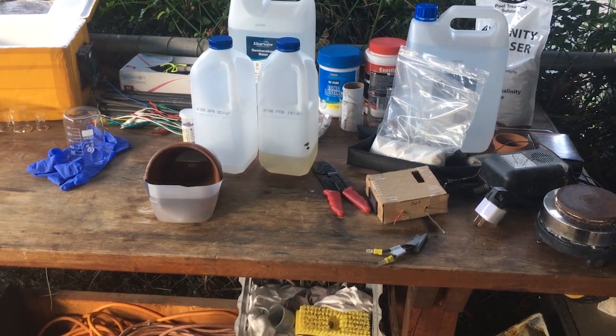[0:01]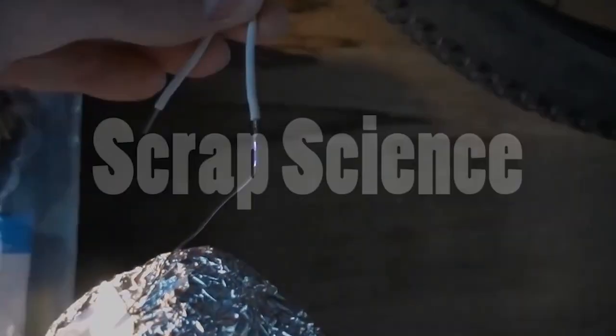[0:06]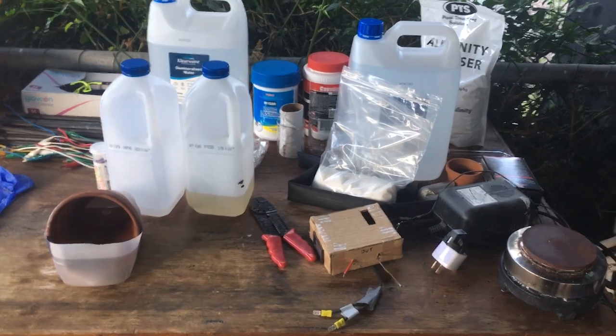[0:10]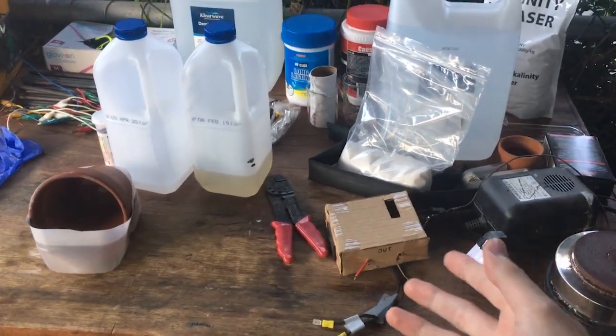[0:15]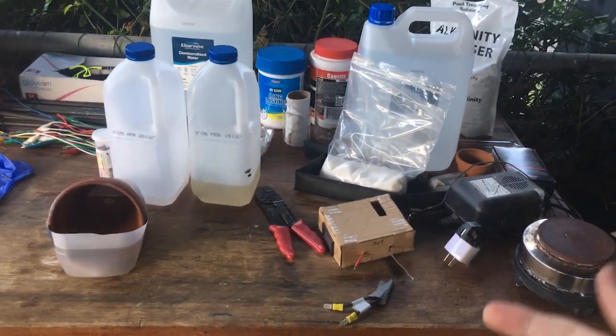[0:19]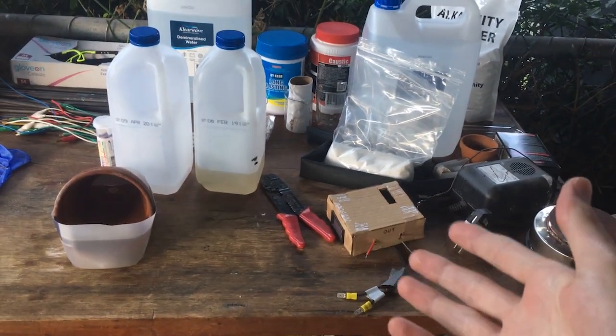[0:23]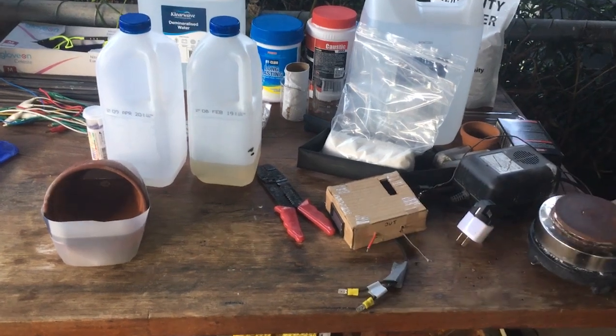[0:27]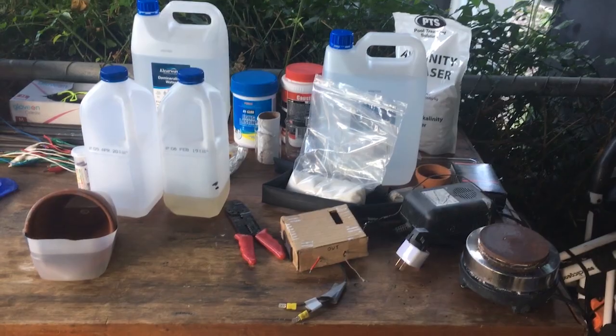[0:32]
So this video is going to be quite a bit different to most of the other videos on this channel. It is a video that we filmed last year as an entry for an engineering competition. What we did was, as you'll see in the video, manufacture a microfluidic circuit that is capable of performing a simple acid-base titration. And now that the competition is over, we thought that the video was worth posting. Maybe you'll be interested. Anyway, on to the video.
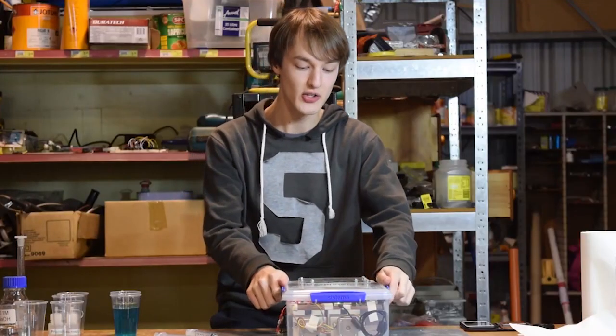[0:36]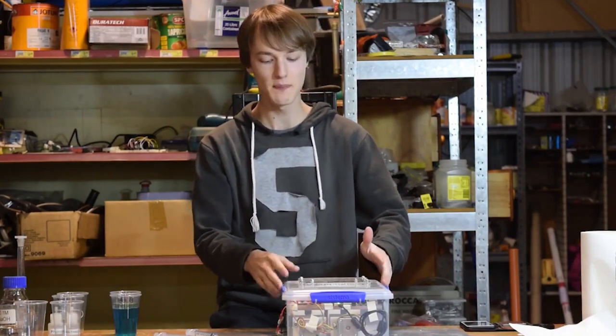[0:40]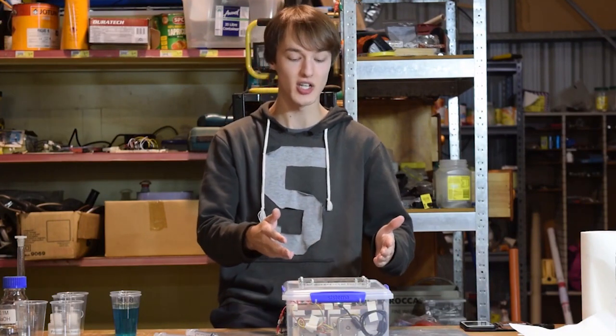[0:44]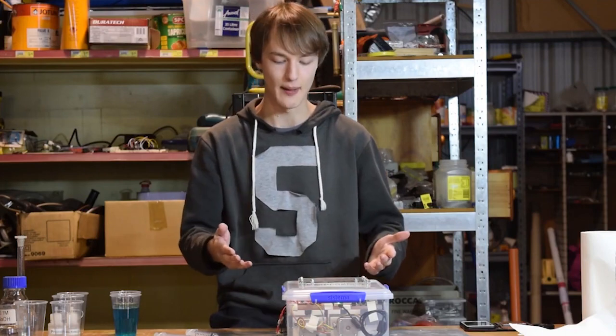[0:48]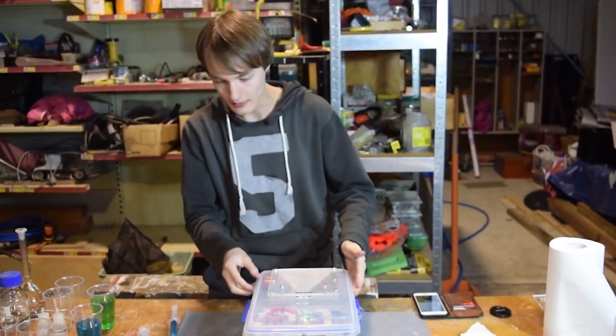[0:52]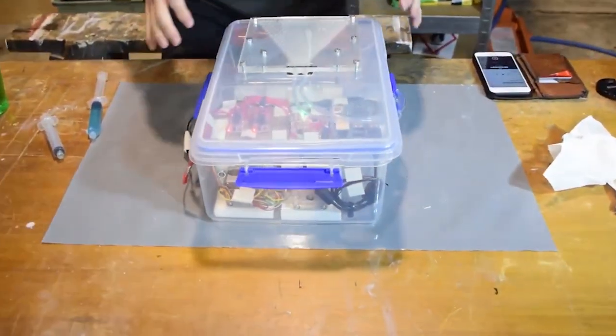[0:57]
So this is our entry to the 2019 Engineering Challenge. I would call it the titration station. What it basically allows us to do is to perform a semi-accurate titration of an acid or a base without a lab setup or expensive glassware. All right, so to explain how all this works, we'll go over each of the parts that we've got here.
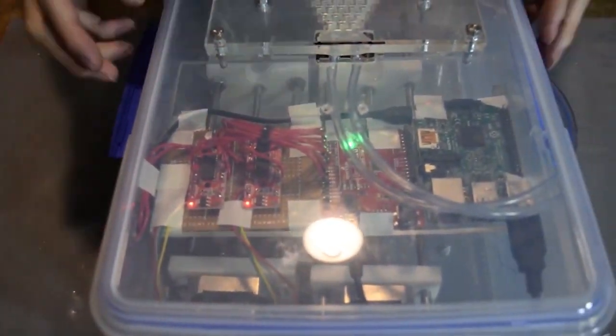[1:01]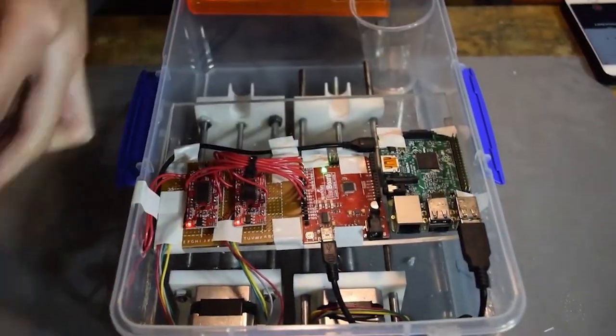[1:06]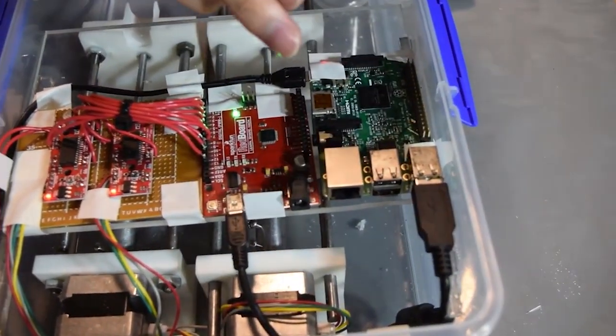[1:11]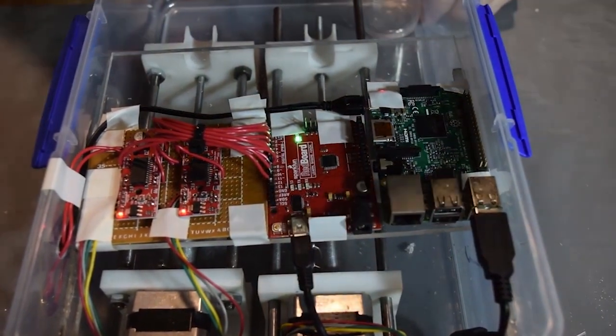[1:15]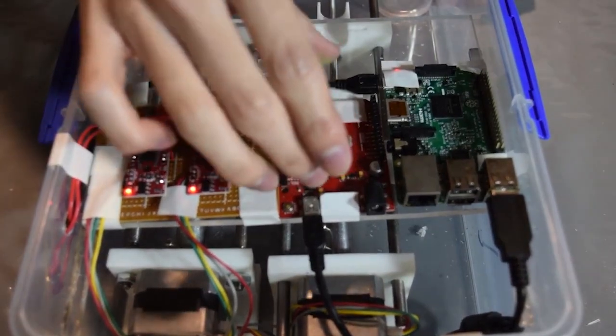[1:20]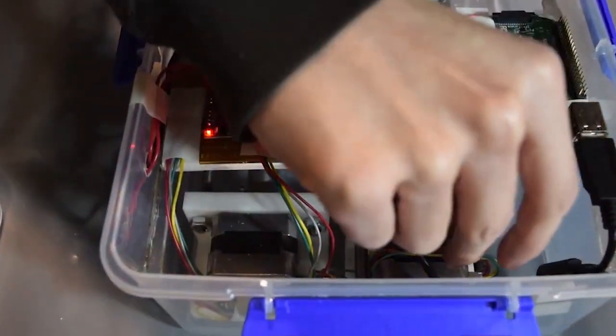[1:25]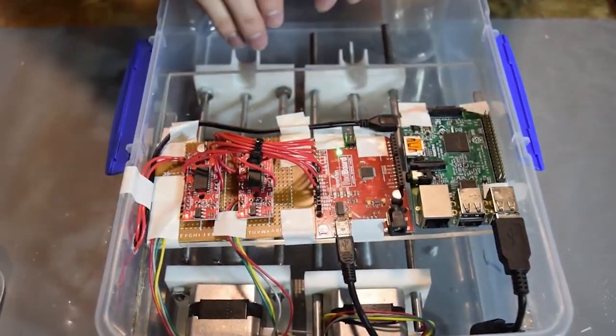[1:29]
We've got all of our power lines coming in from the side here. What that's powering, if I take the lid off for now, we have a Raspberry Pi, which allows us to run the whole thing using an app or a website on a phone. We have an Arduino, which is pretty much just running these driver circuits, which run the stepper motors, which we've got back here. These stepper motors are used to empty syringes with these syringe pumps.
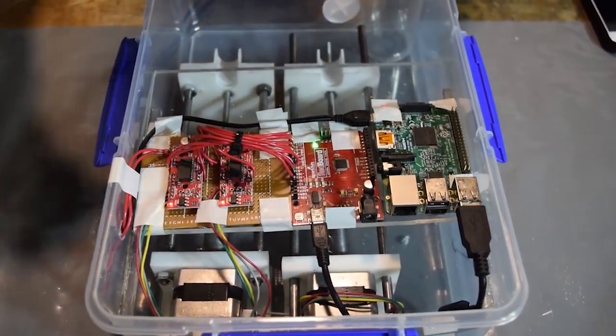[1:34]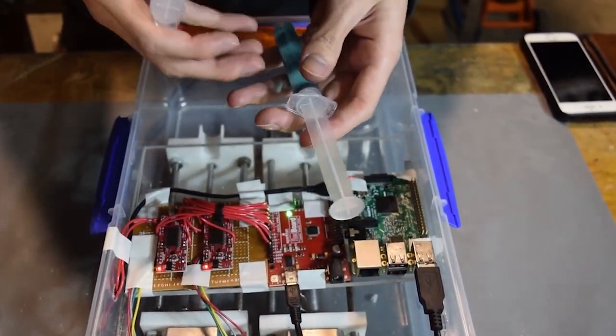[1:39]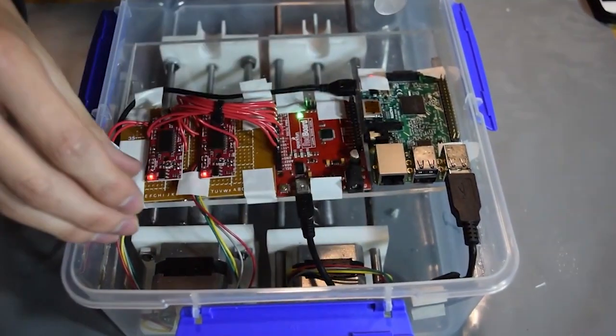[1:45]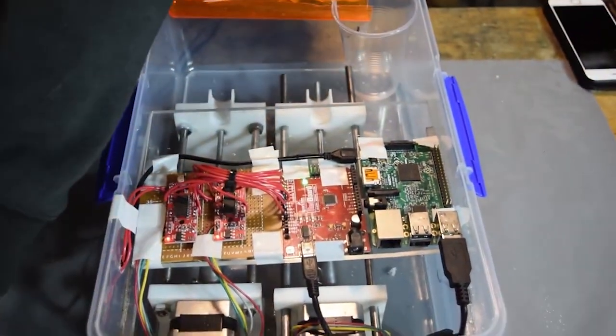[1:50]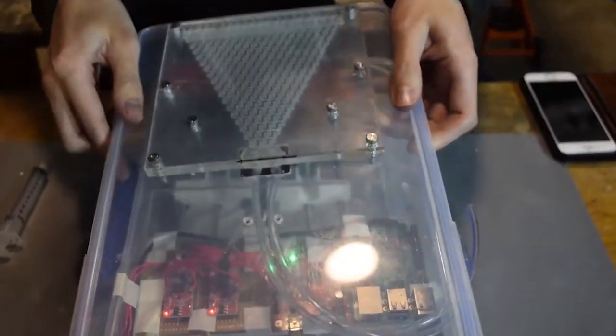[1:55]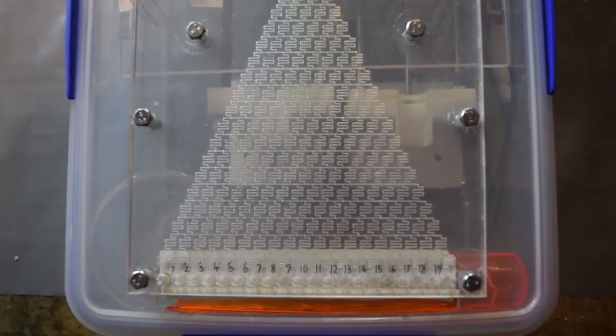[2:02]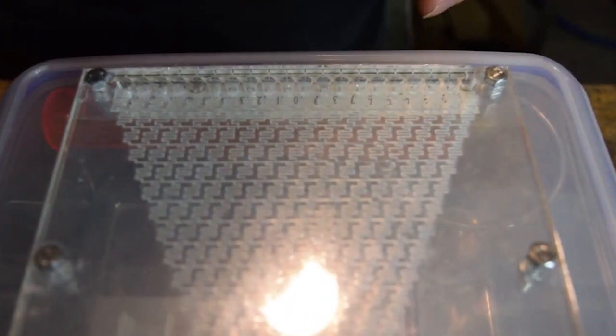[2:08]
So what these syringes will be filled with is, one of them will have a standard solution and one of them will have a titrate in it. And then what we can do with the drivers and the stepper motors is empty these syringes at a very controllable rate. With the syringes, we'll plug them into these tubes here, and this thing, which we've laser cut, is a grid of microfluidic channels, which is designed to create an even gradient of concentrations of both the titrate and the standard solution across the output line here.
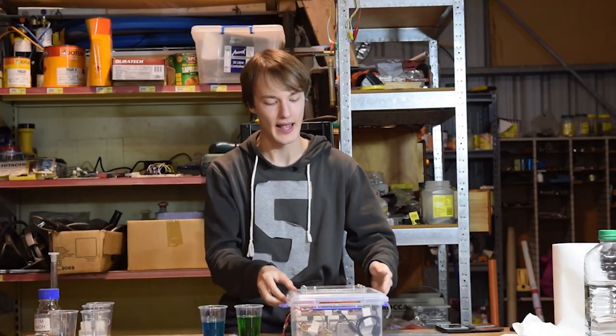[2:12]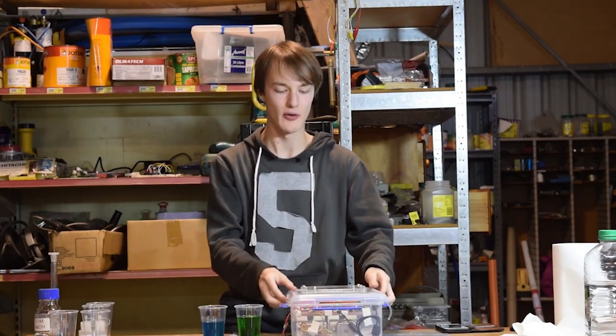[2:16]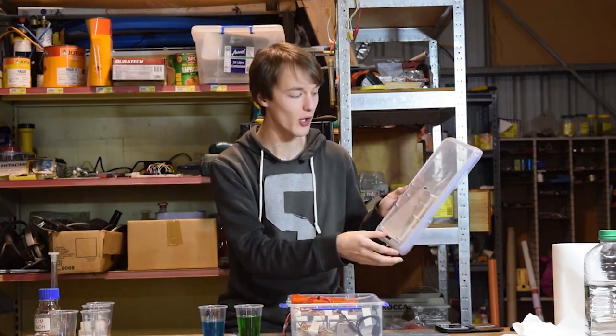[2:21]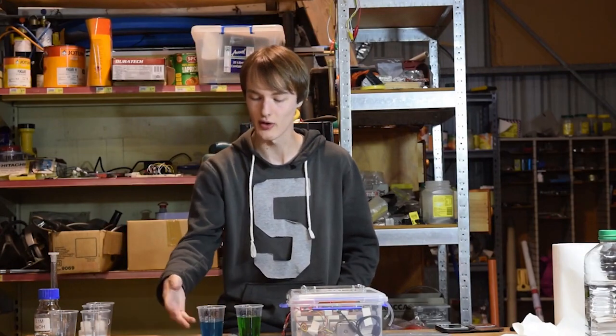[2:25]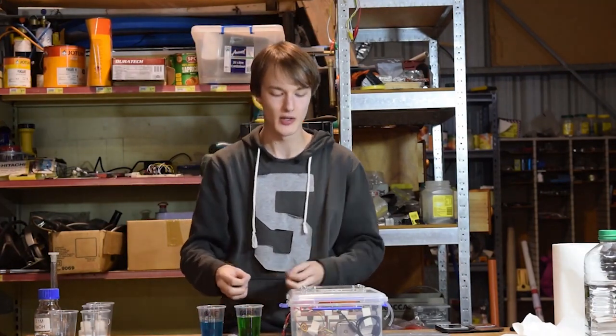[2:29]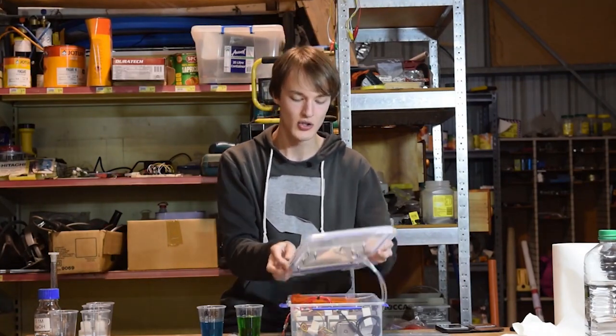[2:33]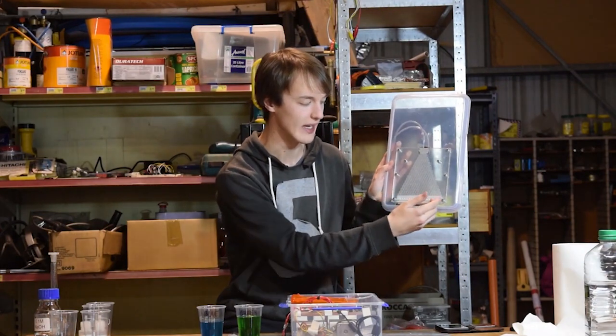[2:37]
Before we explain how this can actually be used to do a proper titration, I thought it would be best to just show you how this gradient generator works using just food colouring in water. We've got a blue solution and a green solution. We can pass both of these through our gradient generator and we should get a generated output line from green to blue, and we should get an even distribution between those two.
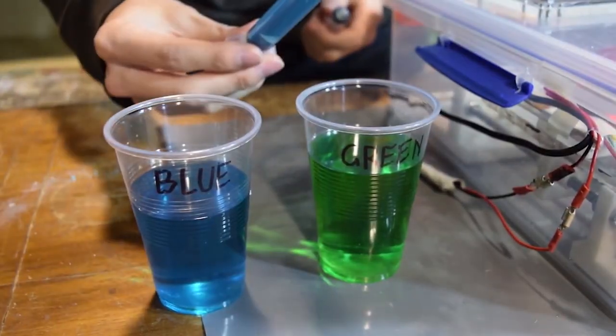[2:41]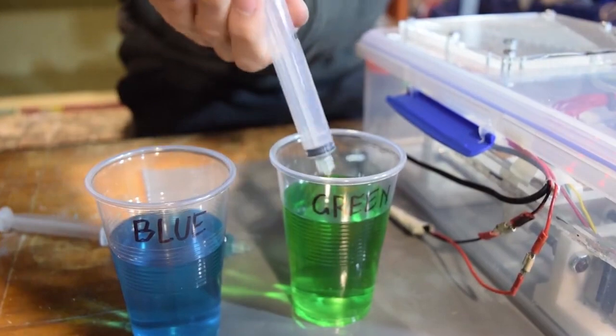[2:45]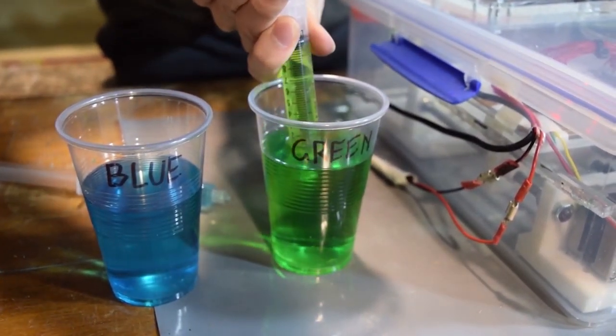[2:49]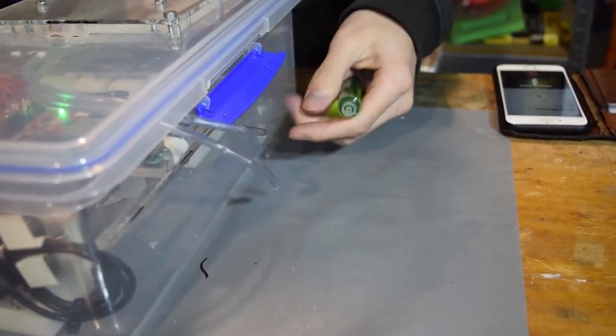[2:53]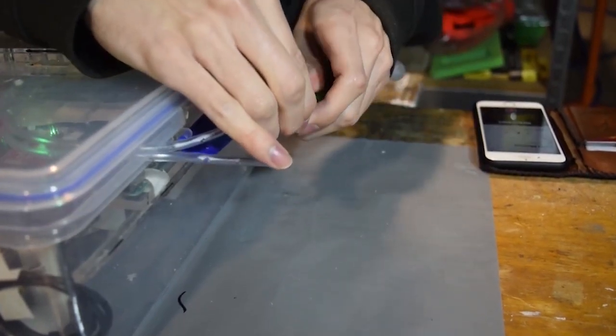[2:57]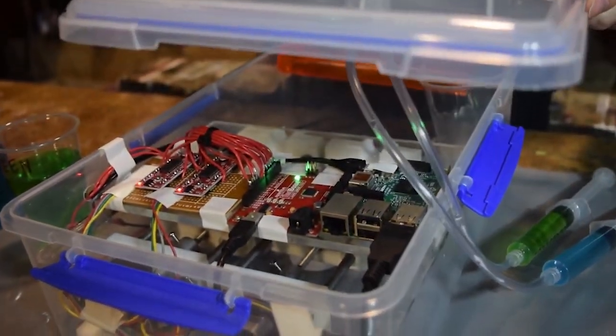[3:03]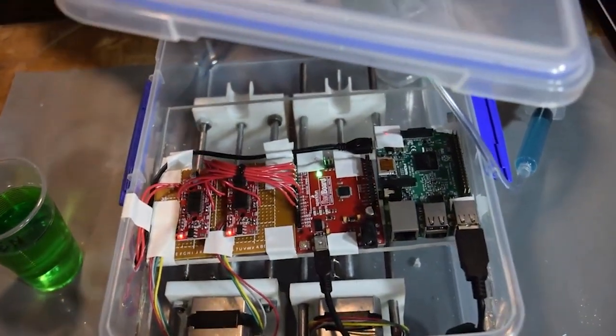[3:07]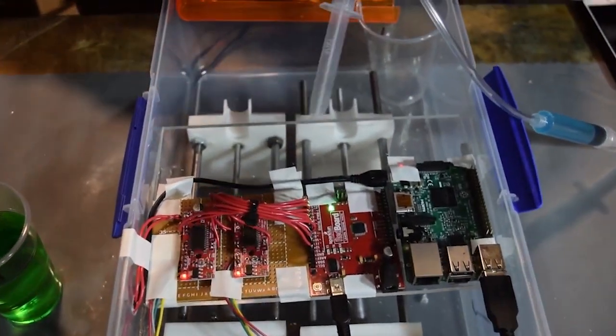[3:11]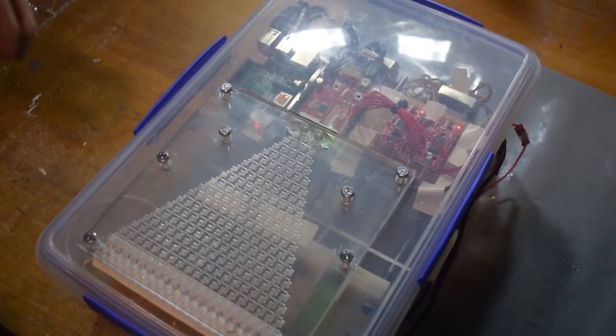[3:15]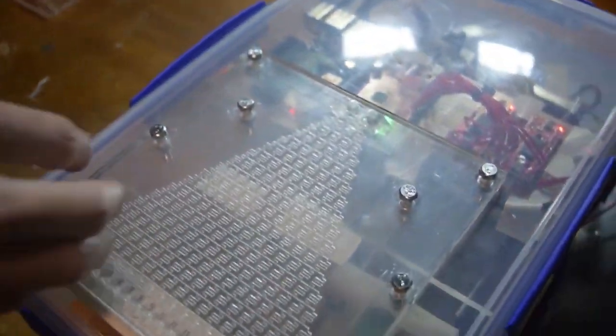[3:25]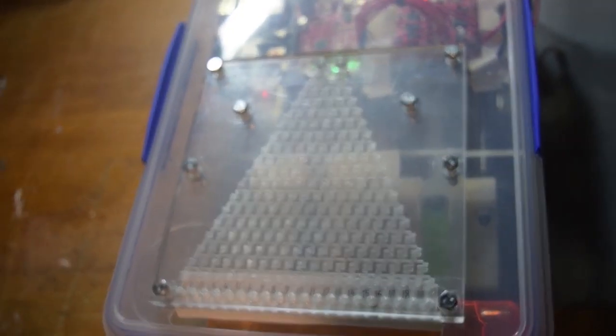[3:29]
So now what we're going to do is fill these syringes with our different coloured solutions. Fill this up and that's good to go. So we've got our syringes, and what we have to do now is just connect these straight on to our input tubes for the gradient mixer. So what we need to do now is stick the syringes into the syringe pumps. All right, so you can see now, if we have a look from the side, we've got our syringes down there in our syringe pumps ready. They're connected up to our gradient generator, and they're all wired up, ready to go. So we'll get the app set up and then we can actually run the device.
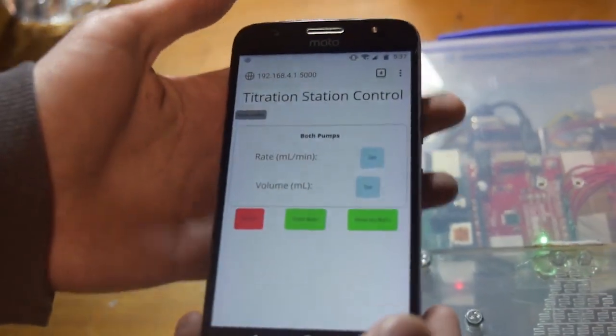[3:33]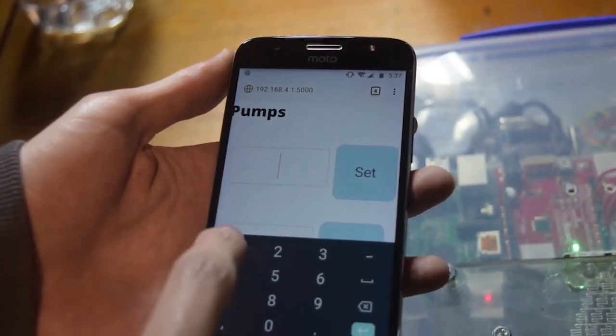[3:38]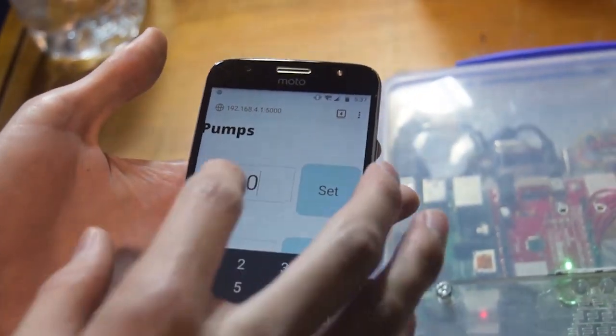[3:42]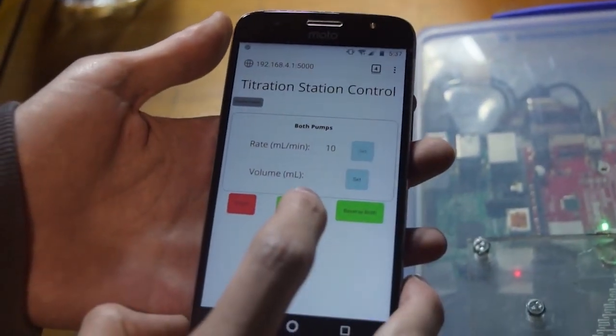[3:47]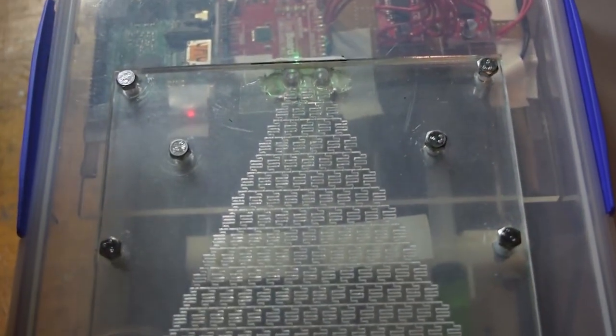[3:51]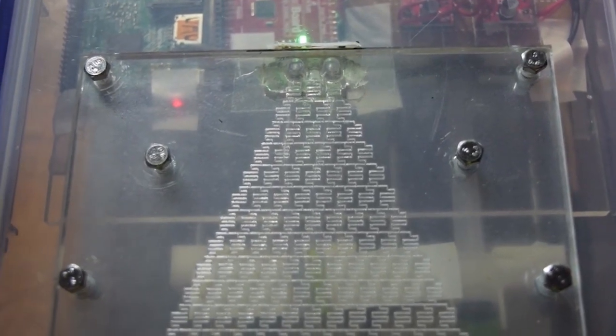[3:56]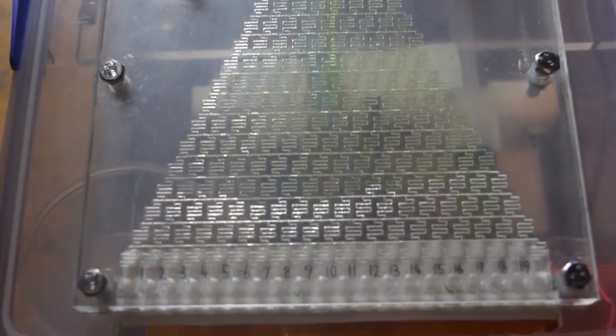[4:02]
So now we've got the app set up on the phone. What we need to do is just put in a rate for the syringe pumps to pump at. It's 10 milliliters per minute. So we'll set that. And then, easy enough, we can just start. Liquid should start flowing through the gradient generator, creating a perfect gradient of green on this end, green to blue, as you should be able to see on the output now.
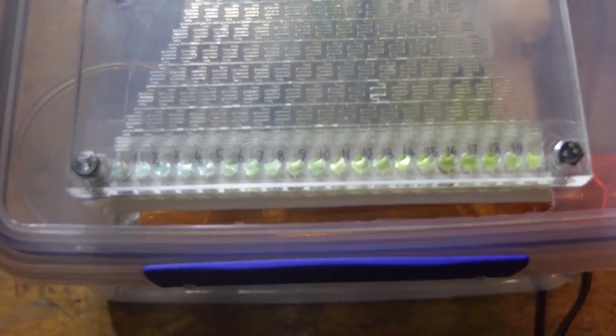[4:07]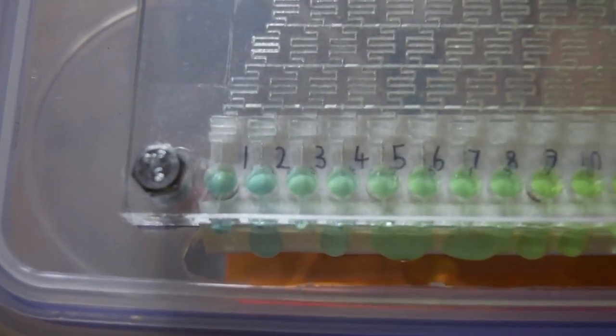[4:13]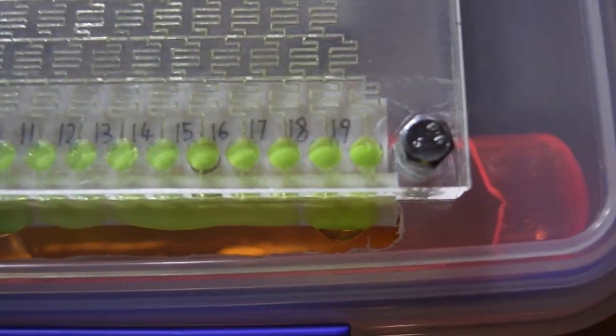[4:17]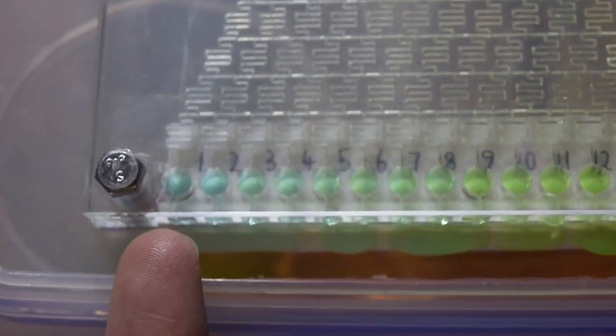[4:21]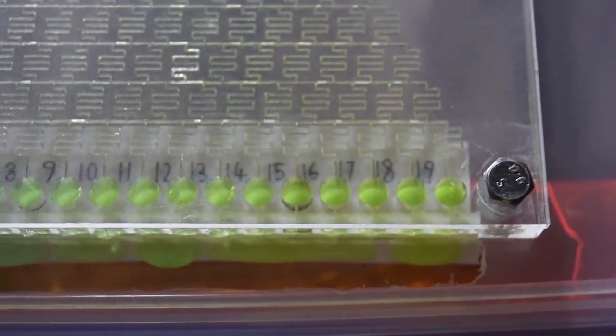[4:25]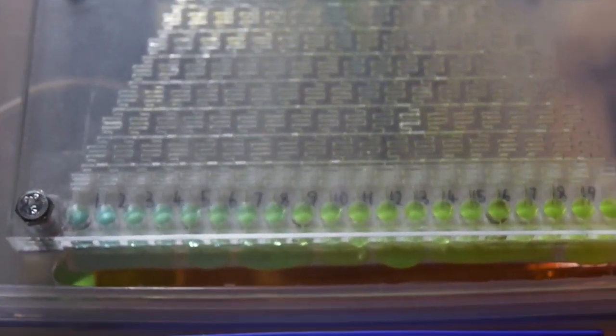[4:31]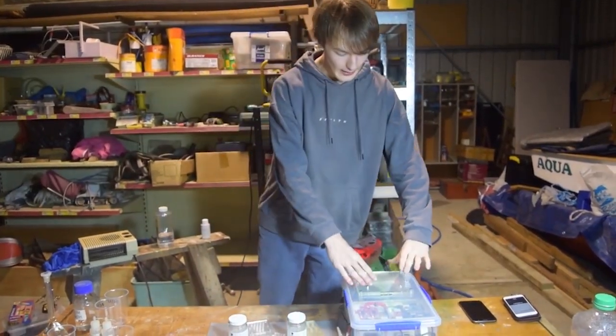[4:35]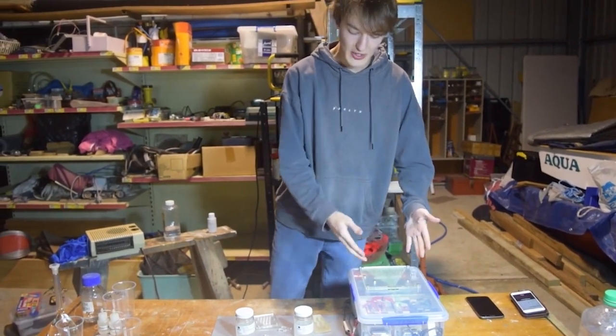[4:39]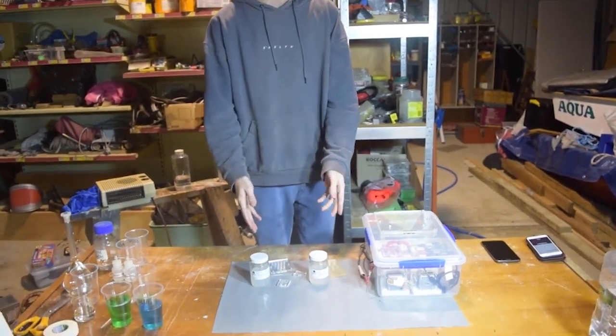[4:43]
As you can see, we've got a really nice gradient from blue down this end all the way up to a pure green on this end. Obviously the green dye is a little bit stronger than the blue stuff, but we do have a nice gradient nonetheless. So now before we go and actually do a proper titration with this and explain how it can actually be used for a titration, we thought we'd go over all of our prototype designs.
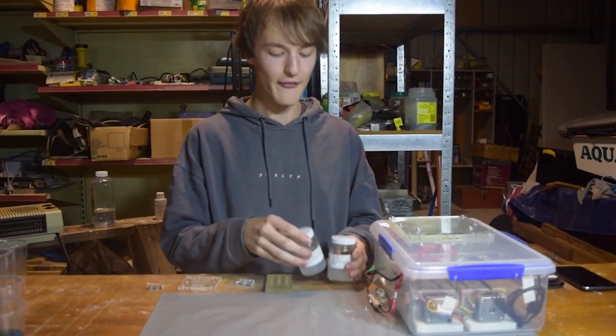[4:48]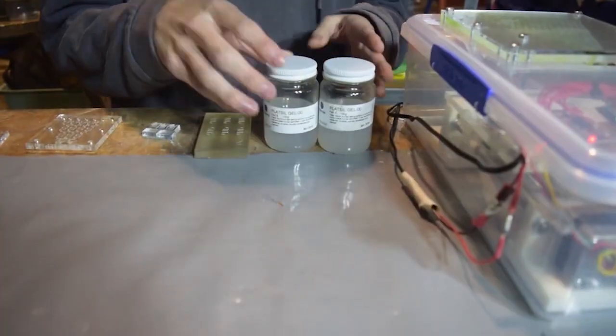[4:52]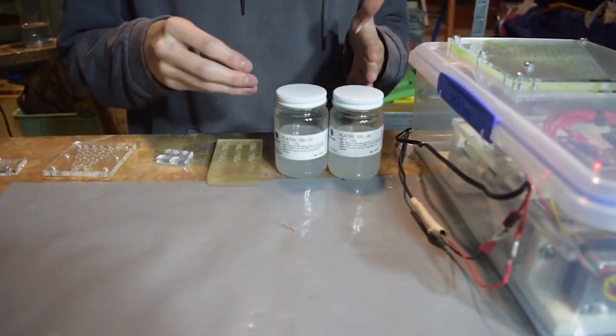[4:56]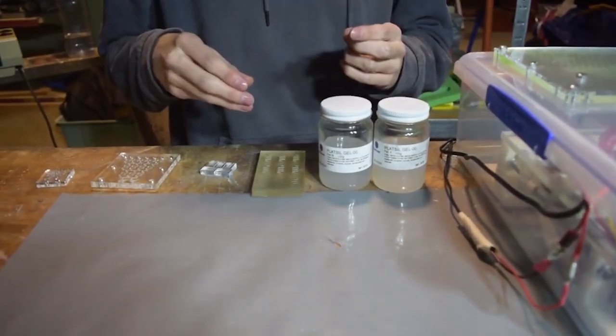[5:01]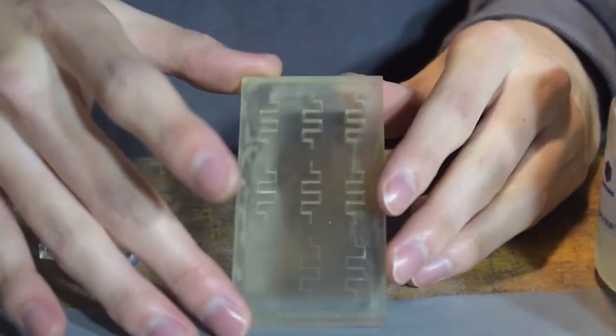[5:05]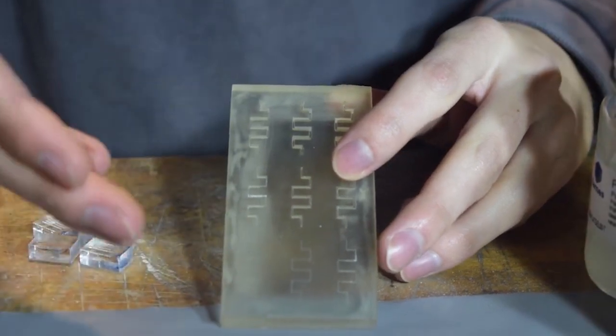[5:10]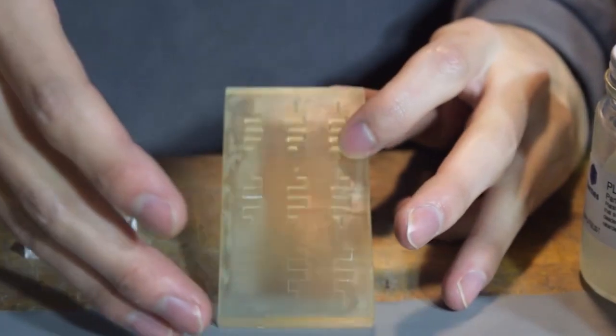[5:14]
So we knew we needed to make microfluidics, and our first design involved this silicone gel. We had a few tests with that and we realized that bubbles and low resolution just wouldn't let that work. So we scrapped that idea and moved on to 3D printing. For 3D printing, we actually ran into a few of the same problems as before. When we tried to print really small channels, which is what we need for microfluidics, we couldn't achieve a high enough resolution. We could only print really big channels.
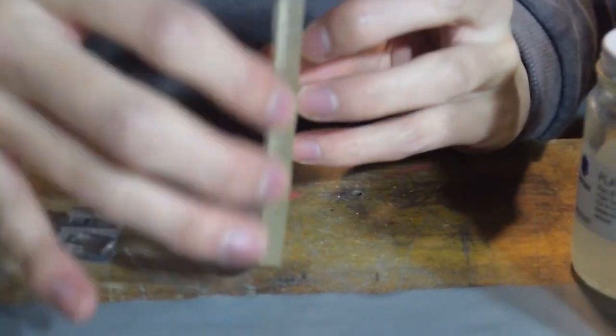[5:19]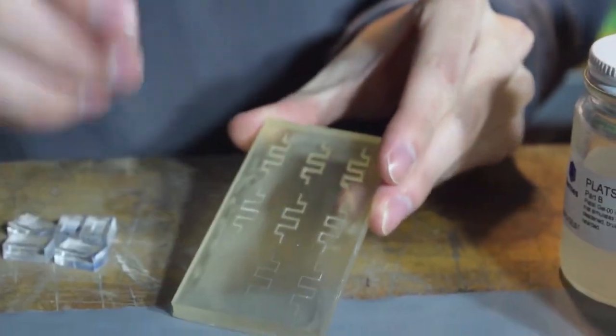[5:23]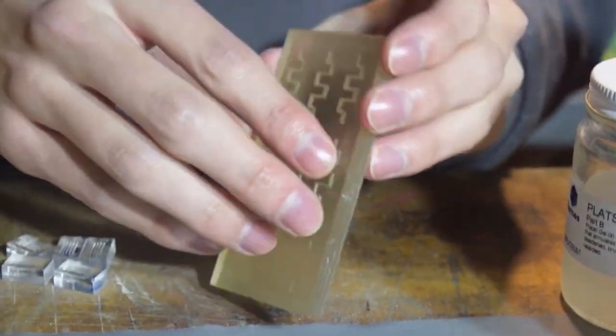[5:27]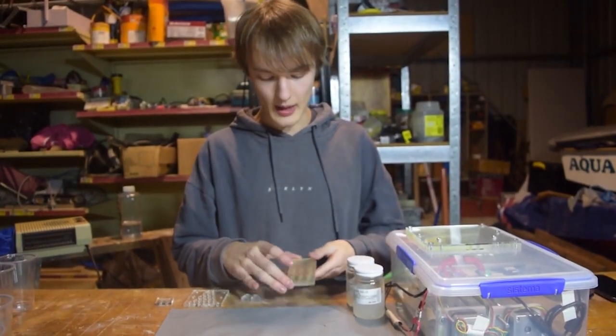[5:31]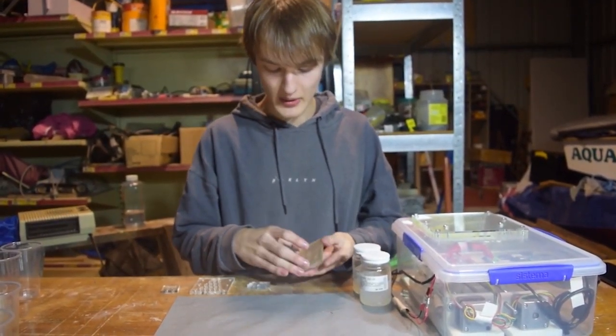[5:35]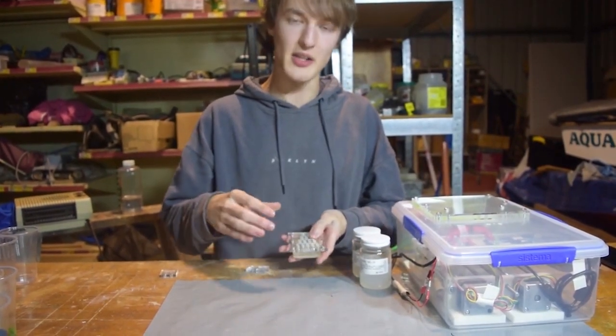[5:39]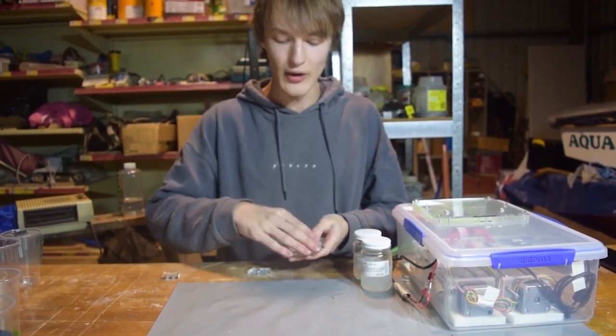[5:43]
Also, the 3D prints wouldn't come out great. They'd kind of be jagged around the edges. And mainly, we weren't able to print channels that were embedded in the material. We could only print grooves on the surface. So after 3D printing, we had the idea to actually use just the surface grooves in that we could just put another piece of acrylic over the top of those grooves and they'd form like an inner channel which could be used for the microfluidics.
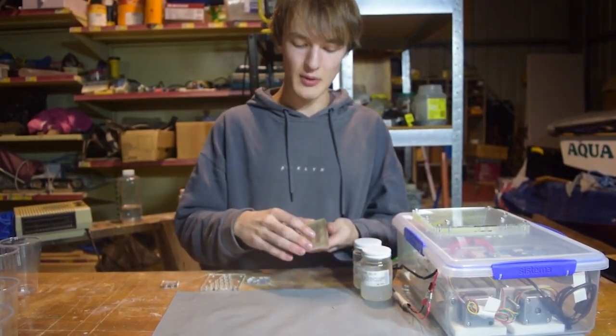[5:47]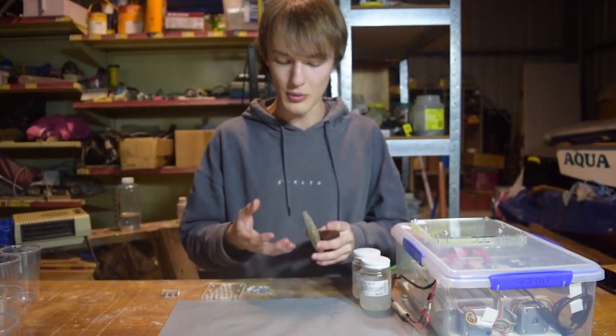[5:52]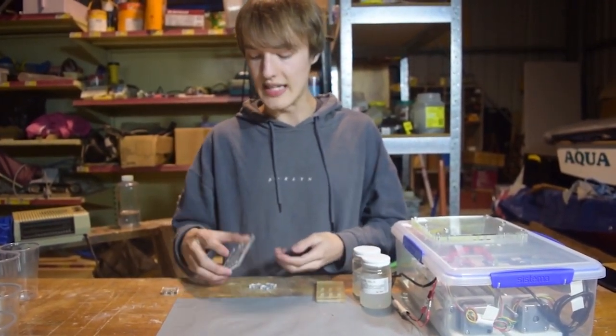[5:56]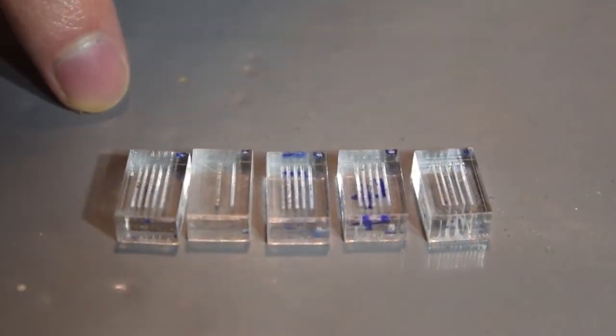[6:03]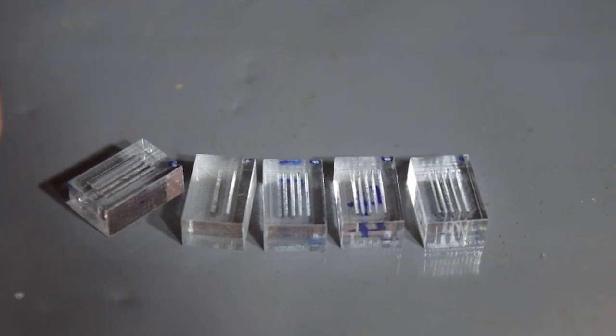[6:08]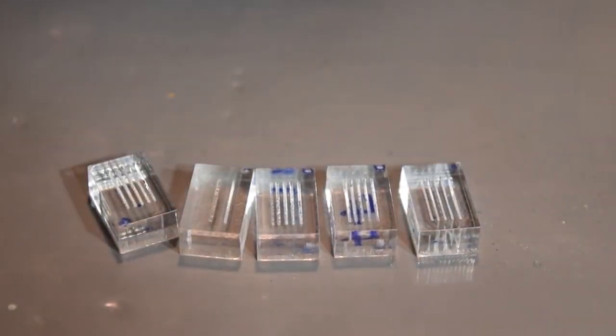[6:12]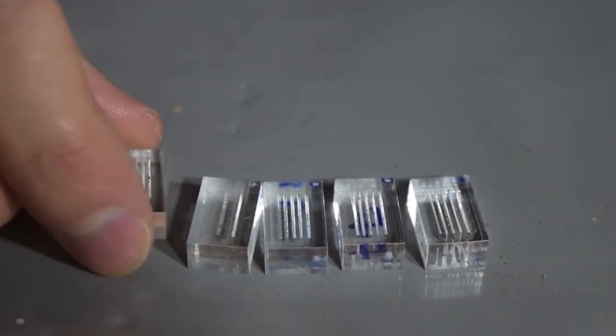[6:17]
But instead of 3D printing, because we did still have those problems with low accuracy and it wouldn't print out right sometimes, we decided that a much better alternative would be to laser cut these channels into a piece of acrylic. So then we went ahead and did some extensive testing with the laser cutter, actually determining whether we could cut channels that were small enough in just the surface of a piece of acrylic. And then we determined the best power and speed settings to actually cut channels that were small enough to determine,
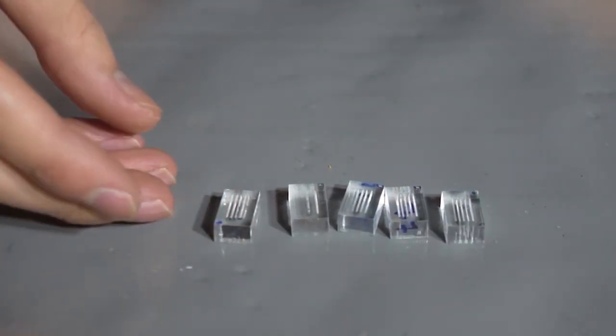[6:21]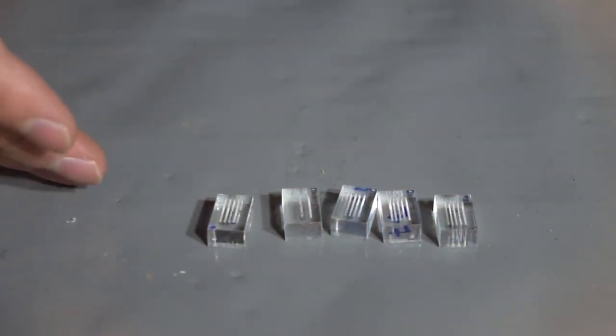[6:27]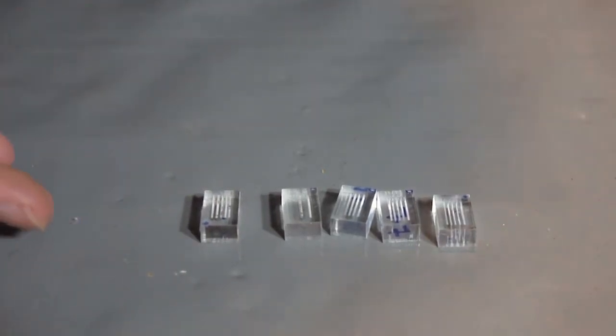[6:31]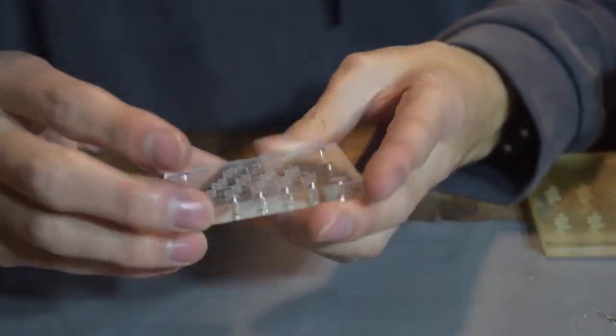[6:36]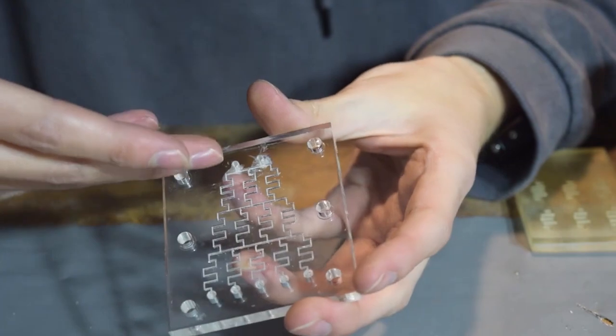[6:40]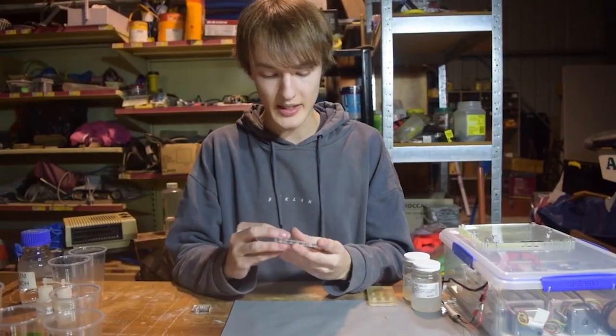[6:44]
like, can we cut straight lines? Can we cut corners for the microfluidics? Can we cut complicated zigzags or networks? Can we make sure that the channels can connect to an input or output hole? So after all that testing, we decided to cut a full test piece of the titration gradient generator. And in testing this piece, we found that it actually worked perfectly.
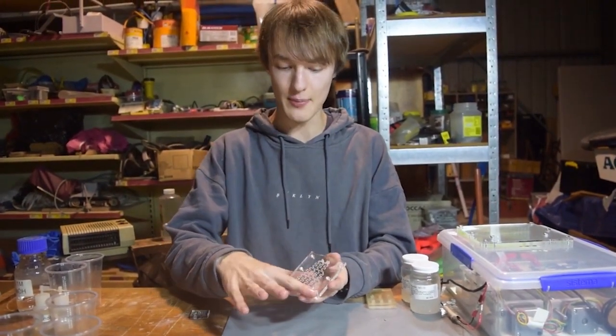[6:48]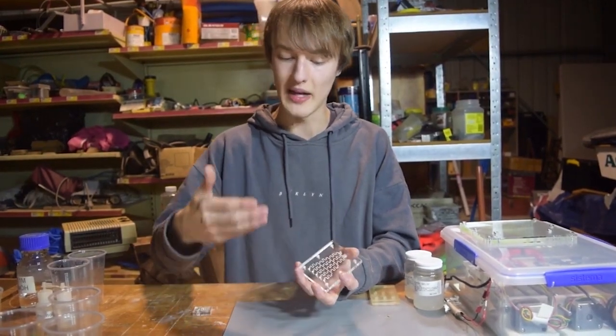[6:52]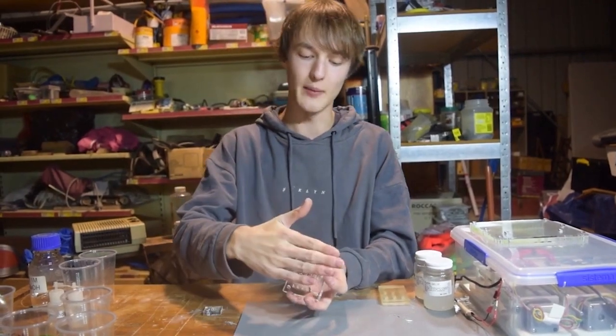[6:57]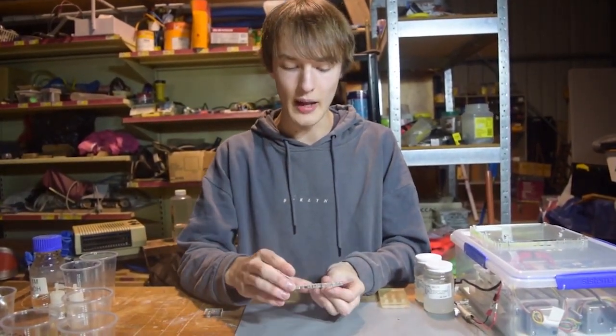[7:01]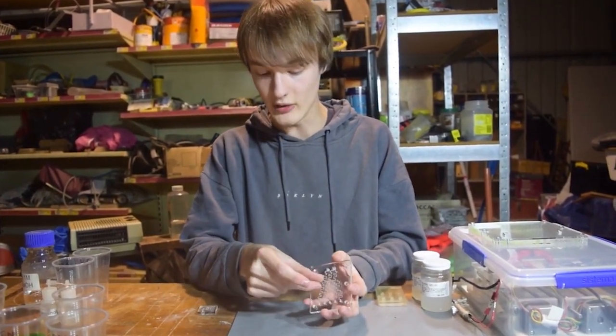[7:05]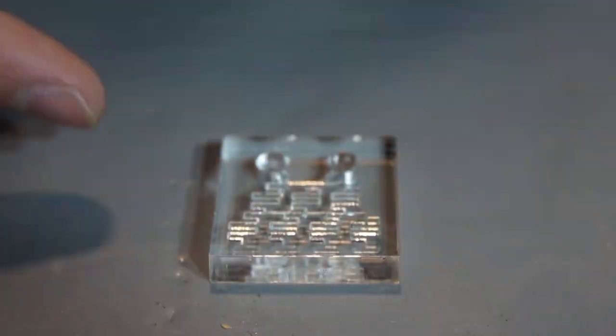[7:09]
After putting a little bit of tape over the surface of this to make all of the grooves channels instead of just grooves in the top of the acrylic, and pressing another piece of acrylic on top, we found that it created a perfect gradient and worked really well. So all we needed to do was make the channels a little bit smaller and make the gradient generator a whole lot bigger. This was our final test cut piece.
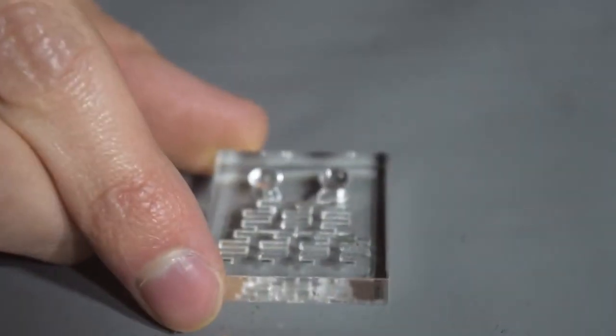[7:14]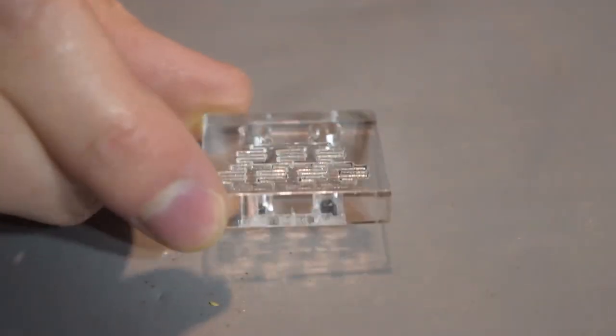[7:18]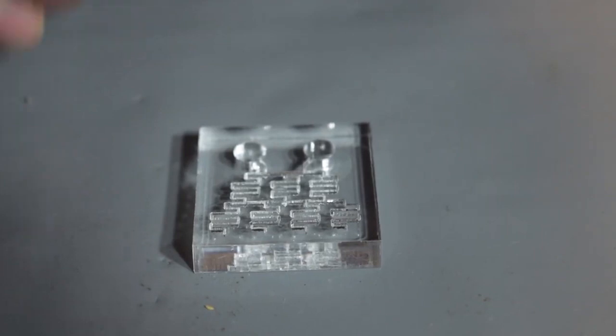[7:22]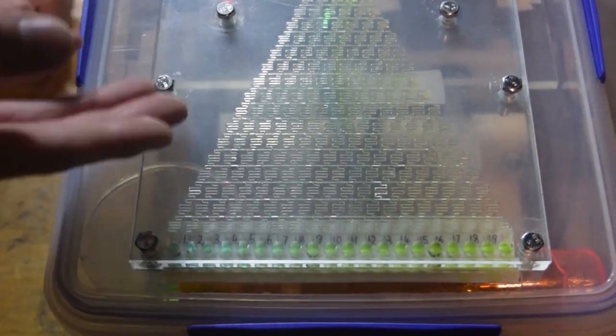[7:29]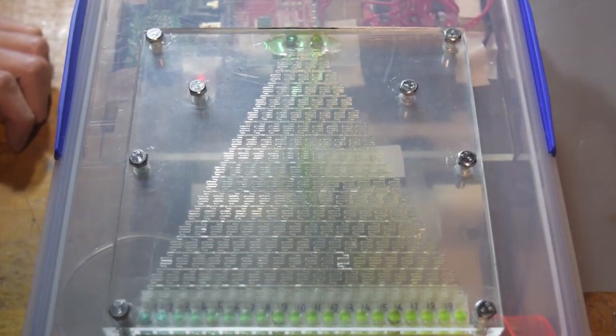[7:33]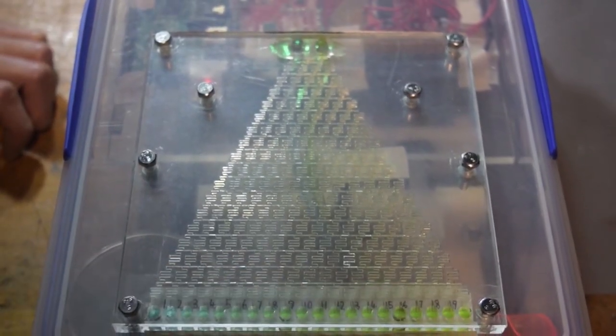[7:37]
It's got the exact same dimensions as the actual gradient generator in the titration station. This was really just to prove that we could cut the channels this close together in the layout that we'd planned. So this was our final design for the gradient generator. It's cut on a really big piece of acrylic and we have a lot of channels in there. So we did a fair bit of testing to make sure that we got an even gradient on the output.
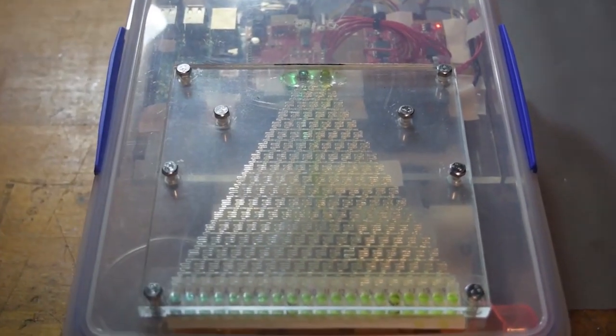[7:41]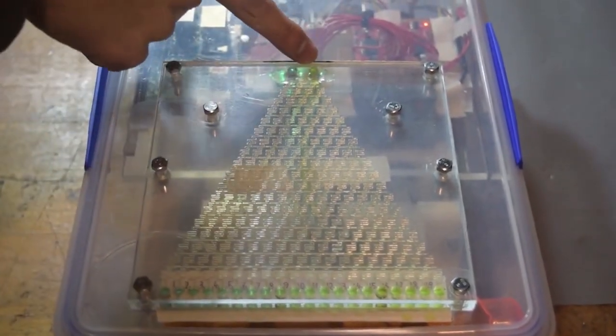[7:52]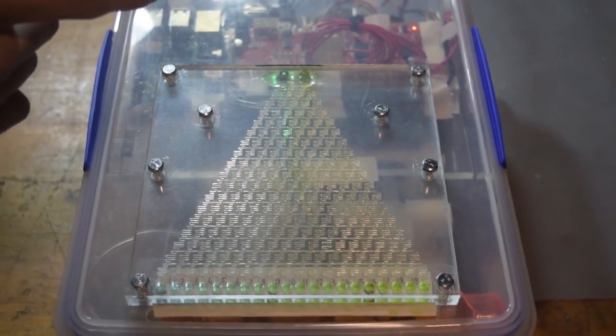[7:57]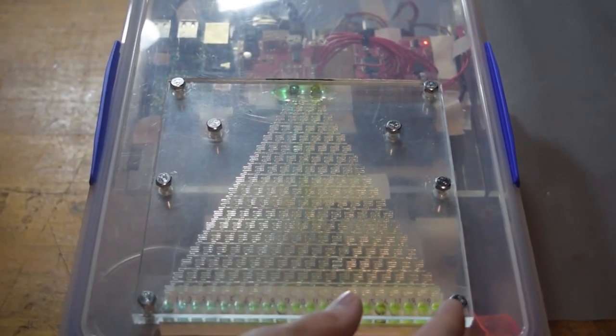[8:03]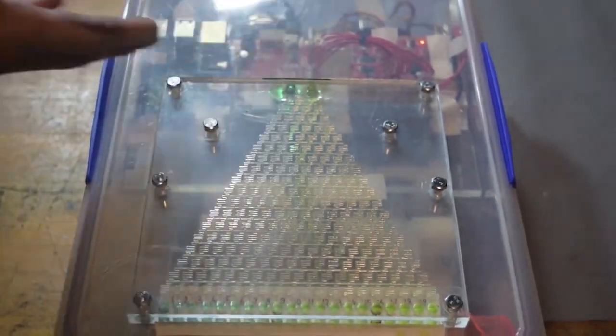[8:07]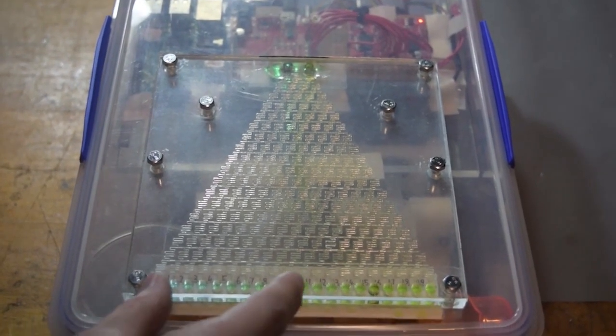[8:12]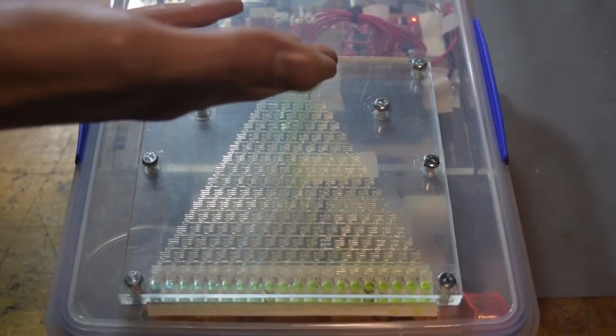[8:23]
So now to explain how a microfluidic setup like this can actually be used for a titration of an acid or a base, we'll start out by assuming that we know the concentration of a standard solution that's being inputted to one of these lines. So now if we assume that the titrate has a concentration that is exactly the same as the standard solution, obviously if we have a bit of phenolphthalein indicator in both solutions, we'll have basic outputs on one side and acidic outputs on the other, and the colour change from a clear to a purple indication from the phenolphthalein will occur right in the middle, and that will be our telltale
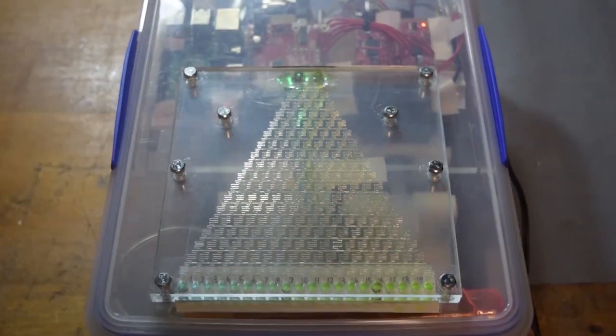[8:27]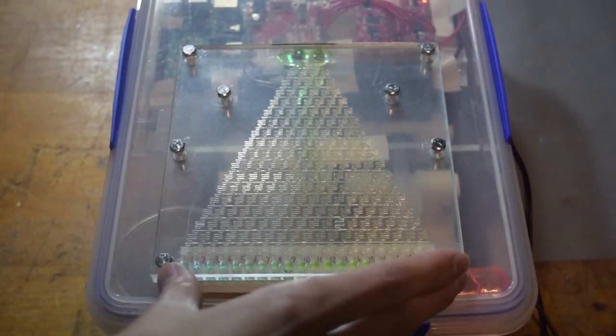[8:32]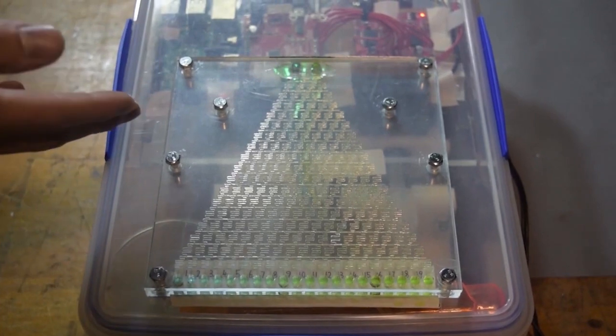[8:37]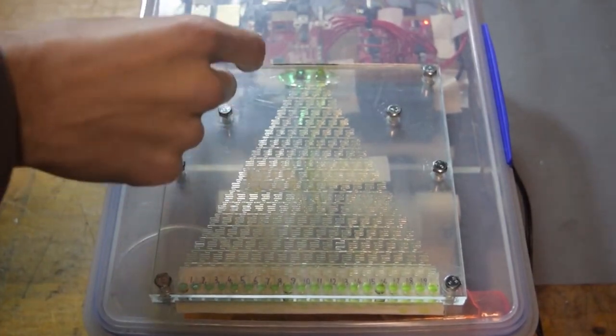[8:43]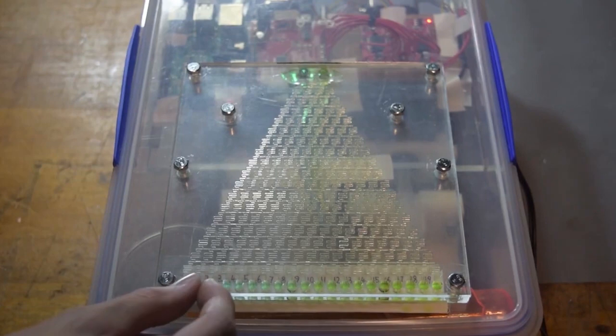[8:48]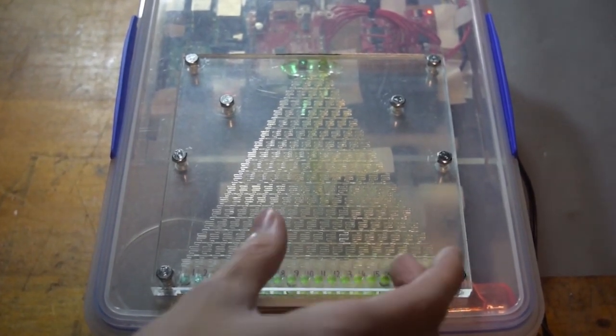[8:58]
that the standard solution is exactly the same concentration as the titrate. So now, assuming that we have an even gradient from one side of the generator to the other, if we now have let's say the standard solution of acid and the titrate of base, if we have the base being twice as concentrated as the acid, we'll end up with a colour change from clear to purple being a third of the way along the output, because the acid to the base is a 1-to-2 ratio, so it should occur really a third of the way along.
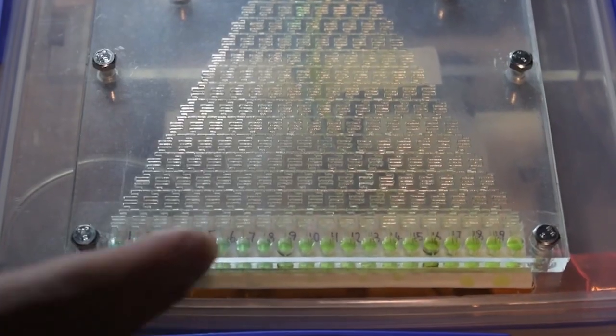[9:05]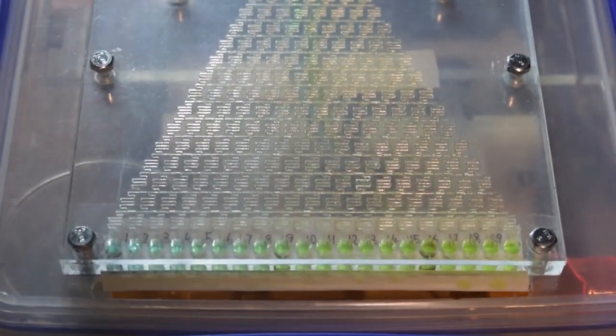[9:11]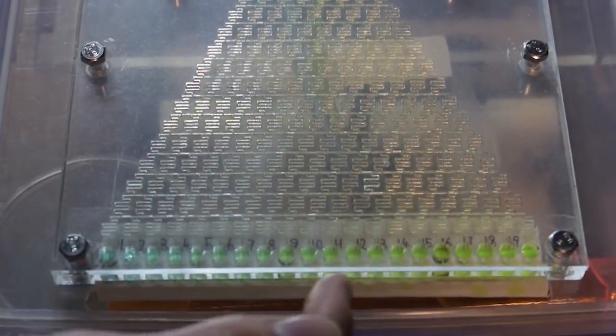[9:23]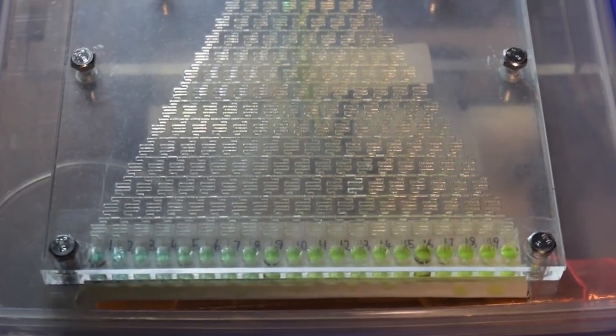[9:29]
Now this kind of ratio between the standard and the titrate can be expanded across all 20 of the outputs, and all of that ratio calculations and stuff is handled by the app. So all you need to do is type in, you can see we've put these little numbers in here, all you need to do is type in the number which the colour change occurred on, from clear to purple, and then the concentration of the standard solution, and that'll calculate the concentration of your titrate for you.
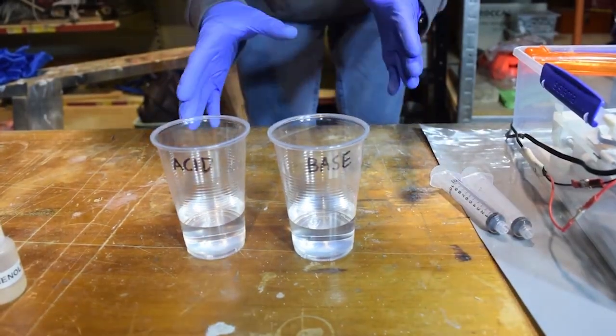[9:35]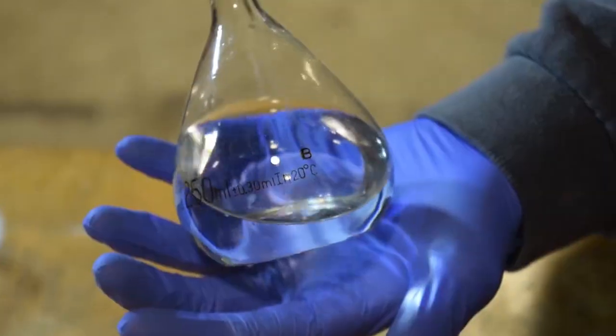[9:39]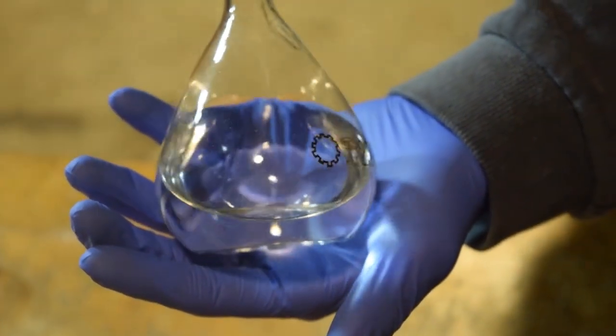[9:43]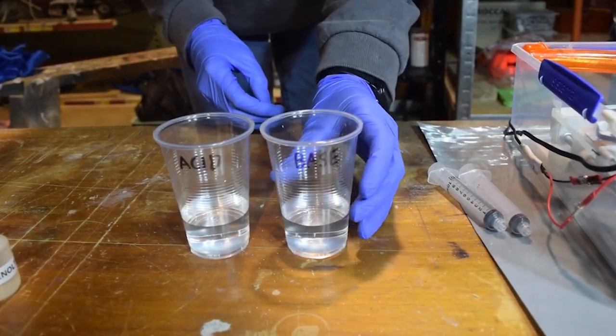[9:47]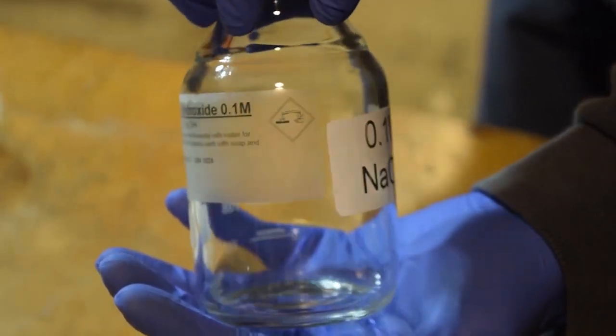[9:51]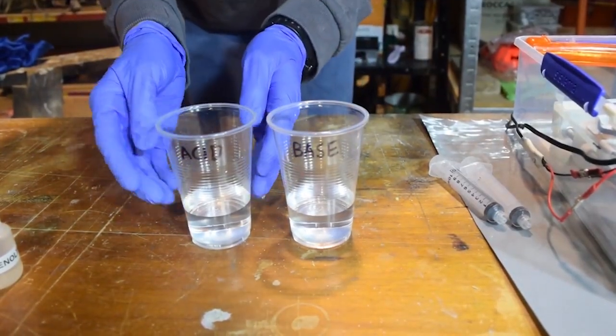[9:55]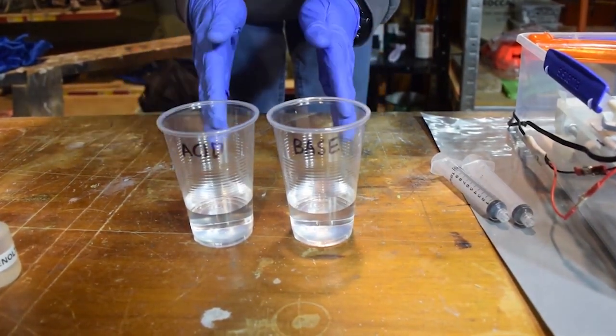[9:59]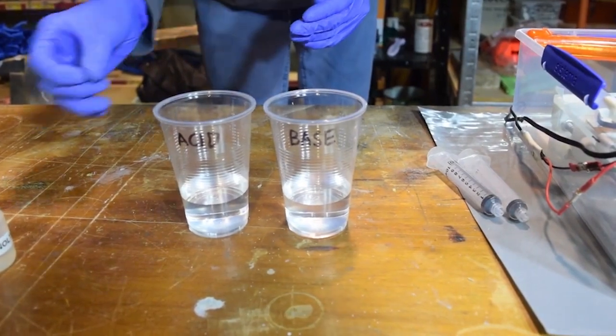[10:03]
So to start an actual titration with this thing, what we need is a standard solution. In this case, this is potassium hydrogen phthalate, which is our acid, and we've got our unknown solution of sodium hydroxide. We actually know the concentration of this to be approximately 0.1 molar, and the concentration of this is exactly 0.1 molar. So what we should see on the device is a color change right in the middle of the gradient generator.
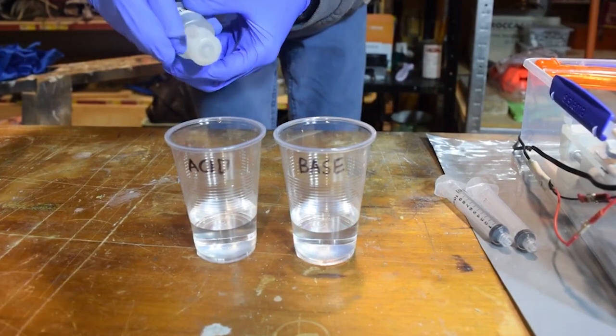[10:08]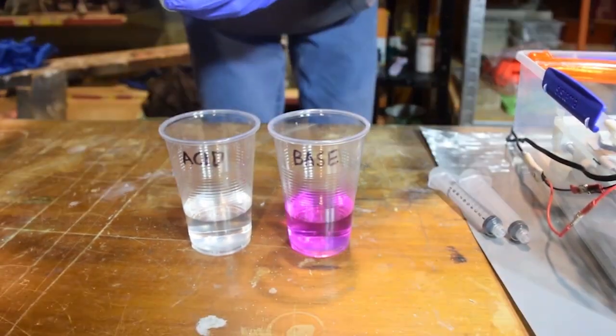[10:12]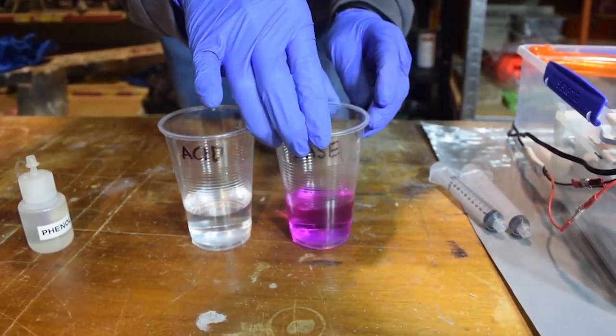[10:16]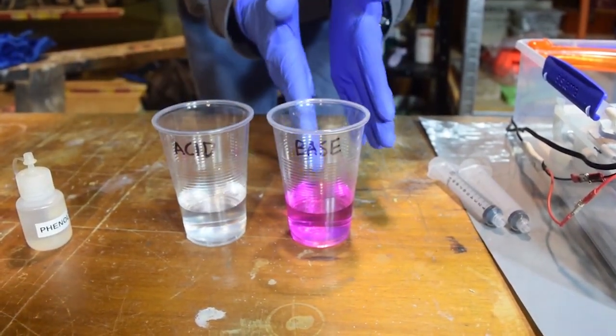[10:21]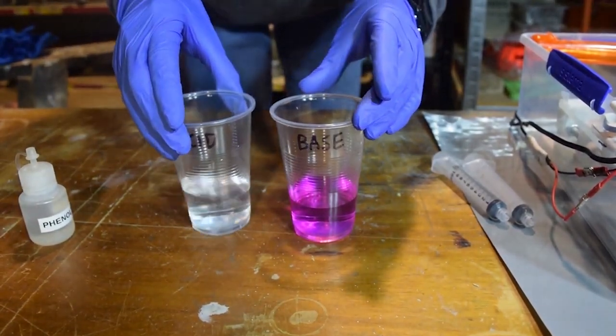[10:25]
The first thing we've got to do is add a few drops of phenolphthalein indicator to each. And you can see instantly the sodium hydroxide solution goes purple and the acid remains clear. So that'll act as our indicator of the color change at the end of the gradient.
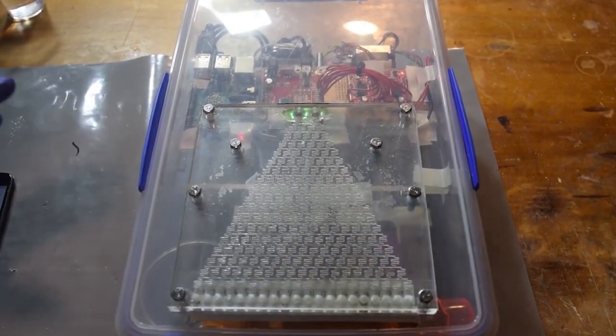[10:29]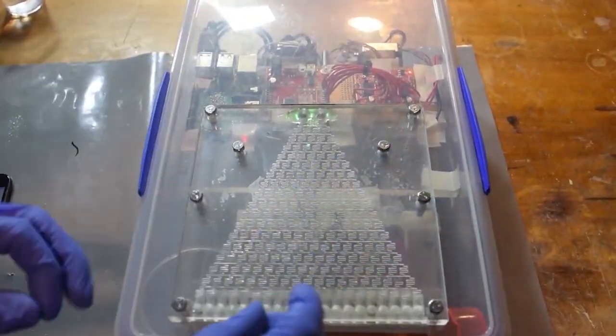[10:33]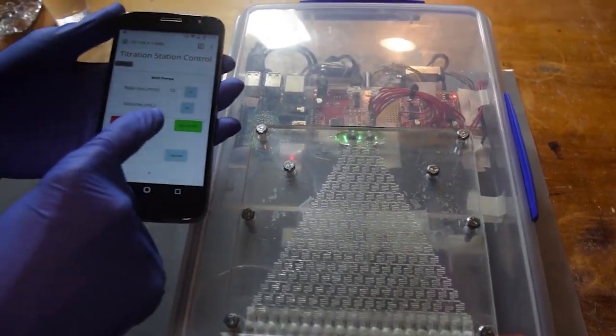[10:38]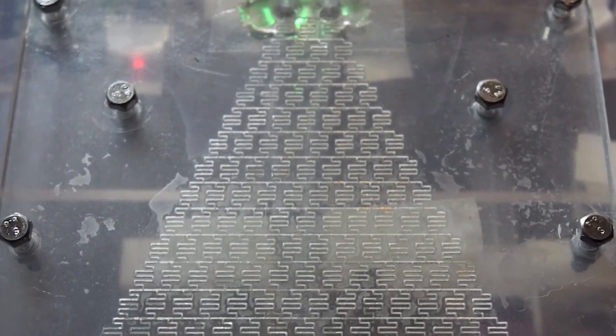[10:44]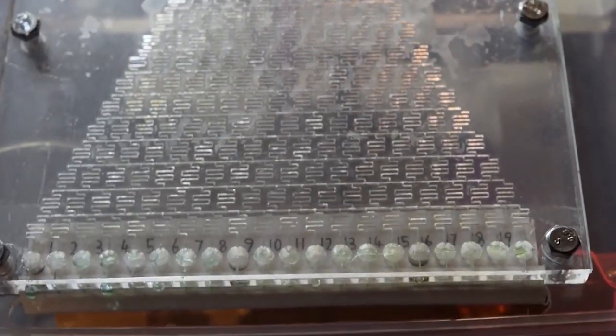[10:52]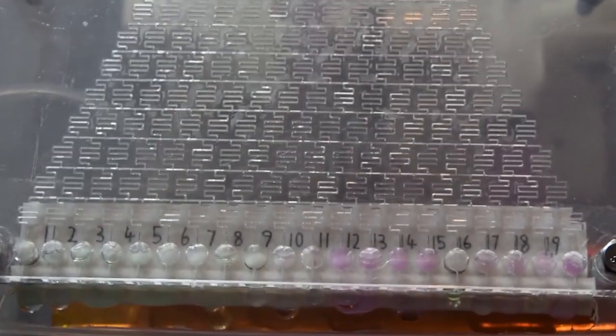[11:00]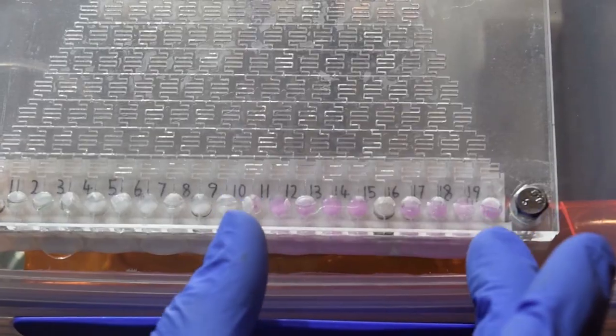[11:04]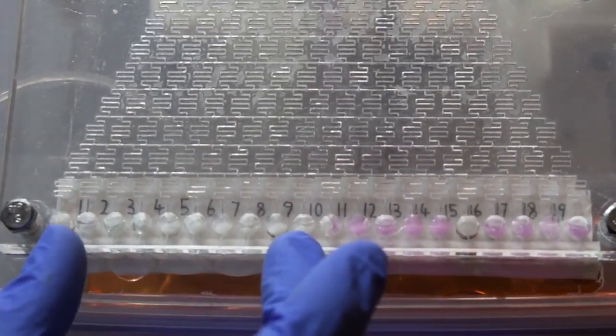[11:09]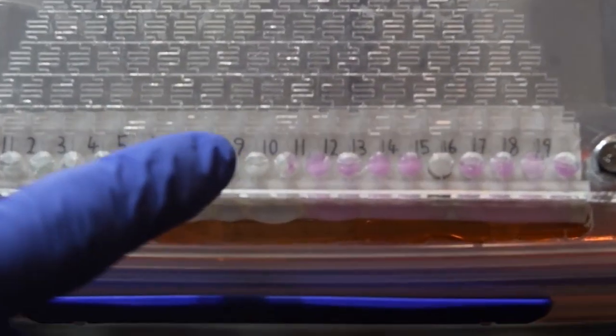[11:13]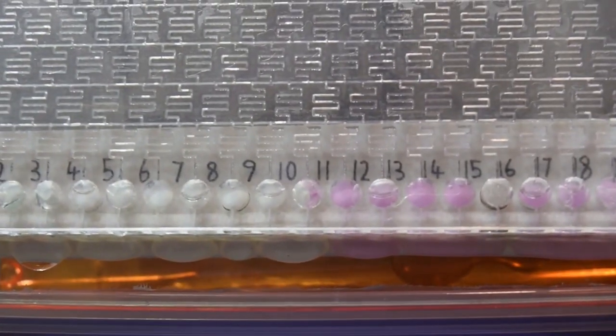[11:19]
So we've reset the syringe pumps down in the machine and we've got the titrant and the standard solution loaded in the syringes. So all that's left to do is now run the device. And you can see that on one side of the machine we have pink outputs and on the other side we have perfectly clear outputs. And so the junction between those two, you can see, occurs on number 10. So we'll go ahead and look at the app again.
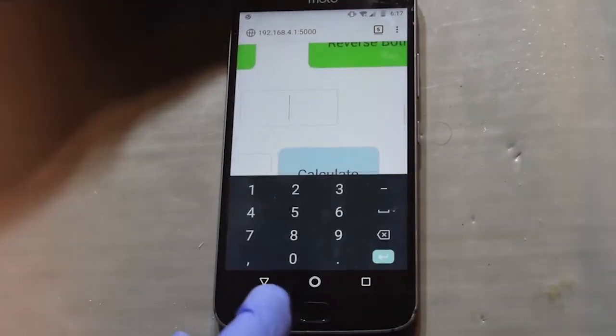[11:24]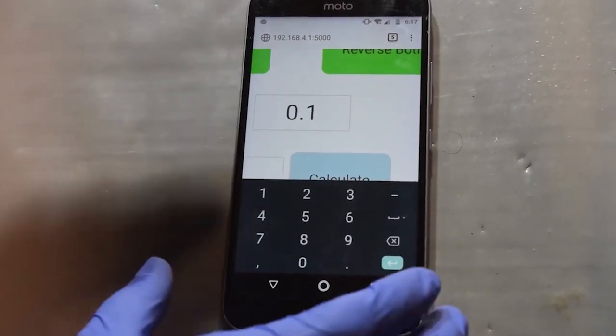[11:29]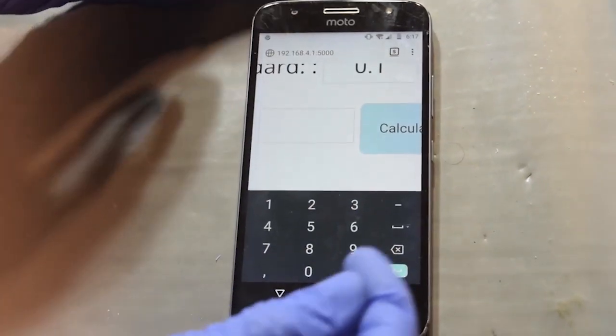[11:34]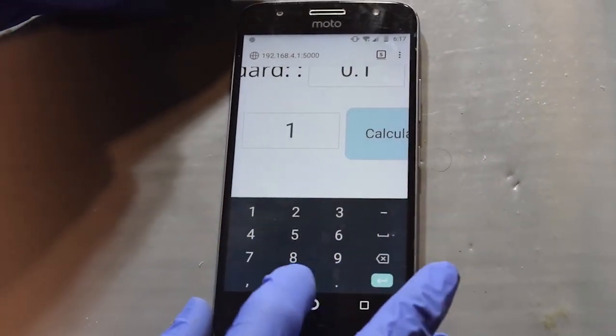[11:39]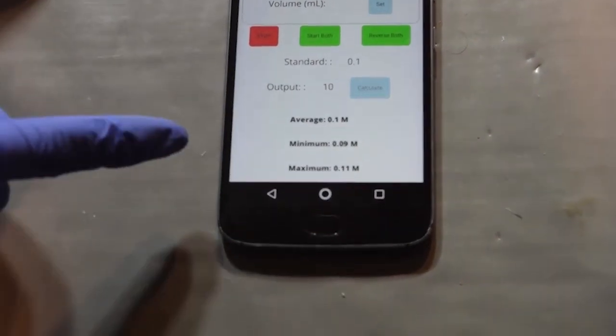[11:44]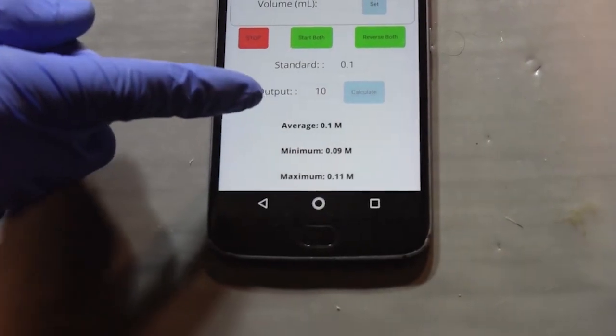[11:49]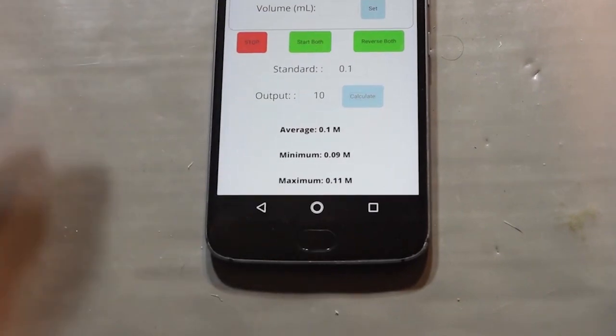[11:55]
To make the app perform the calculation, all we need to do is type in the concentration of the standard solution. This is 0.1 molar. And then we need to also type in the number on which the colour change occurred. So that was number 10. And we can calculate, and we can see that the concentration of our sodium hydroxide solution must be approximately 0.1 molar and must be between 0.09 molar and 0.11 molar.
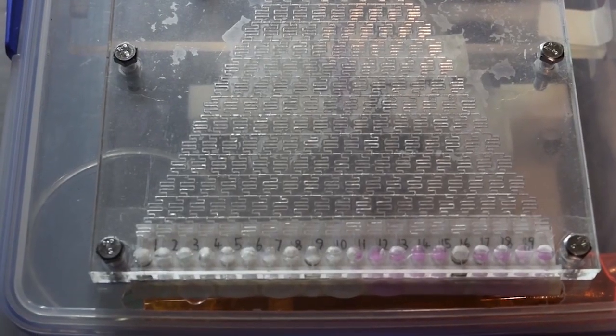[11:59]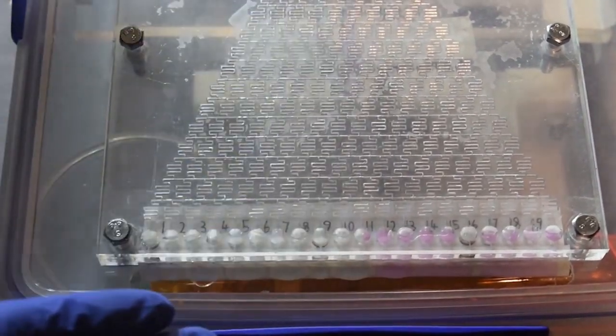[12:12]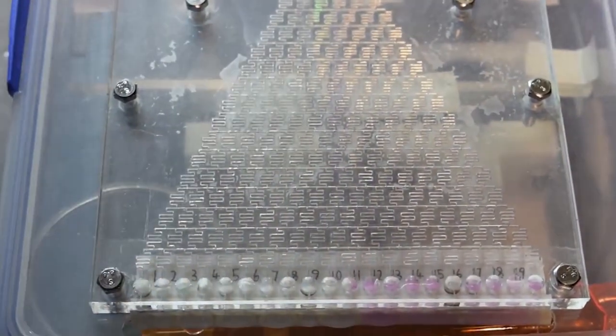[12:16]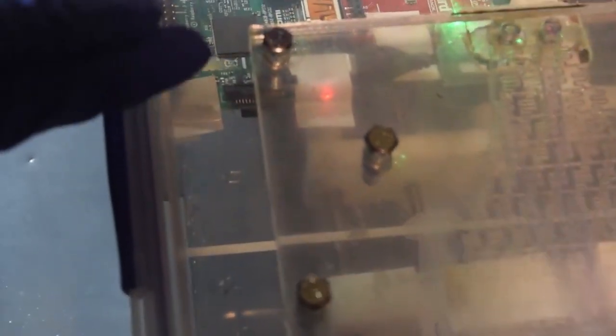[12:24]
So a quick note on accuracy. The design that we've got right now with 20 outputs can measure the concentration of an acid or a base to within 10%. And that can actually easily be scaled up. This gradient generator can be made bigger to get a much, much higher accuracy in terms of the concentration of the titrate.
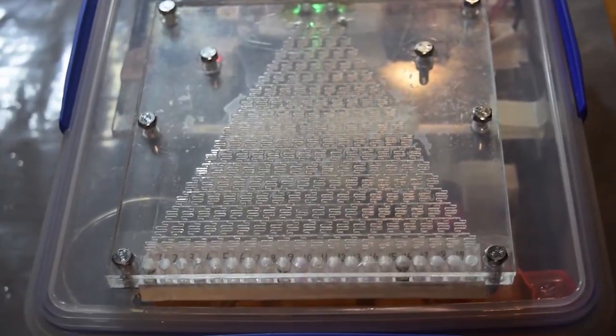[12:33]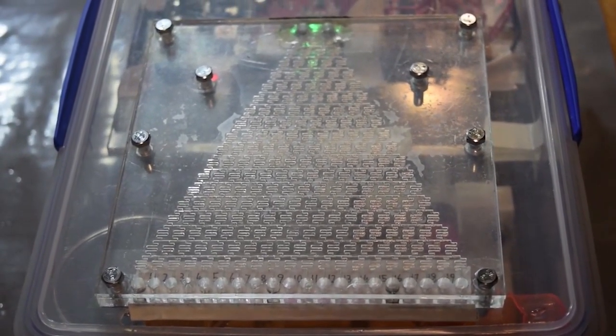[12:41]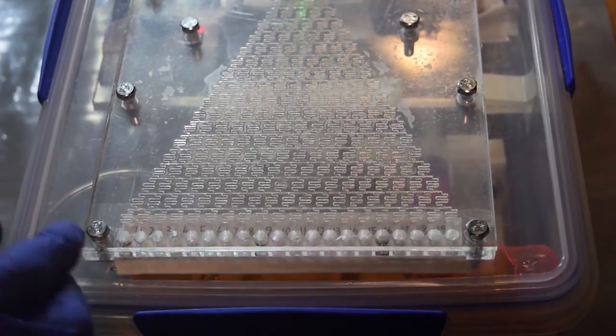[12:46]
Right now what we're doing is running it backwards. It's really easy to do with the app once again. This is just so we can reload the syringes for the next titration. And we're now set up for a second titration. This time the titrate, the sodium hydroxide solution, we've made up to be approximately twice the concentration as last time. So hopefully the colour change position will be somewhere closer to the left side here.
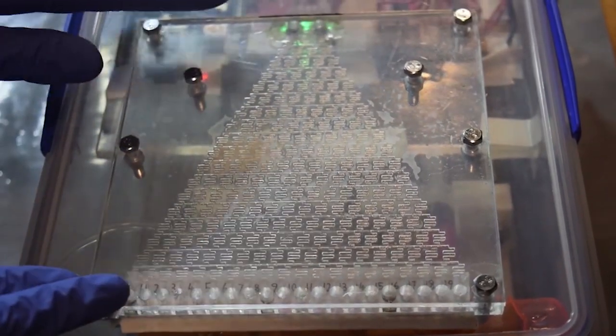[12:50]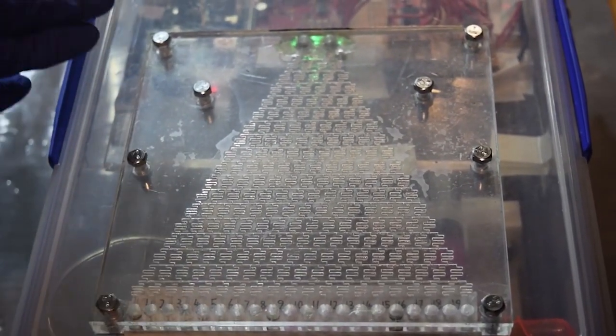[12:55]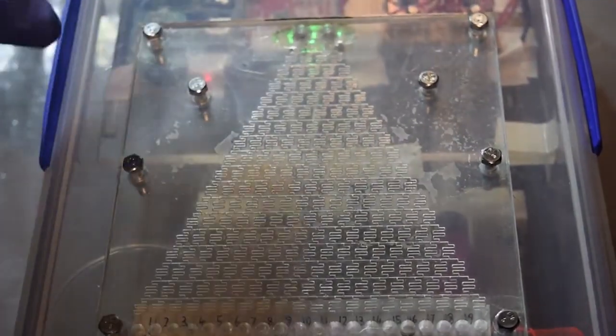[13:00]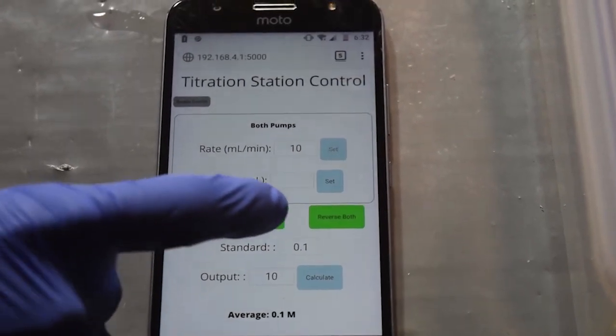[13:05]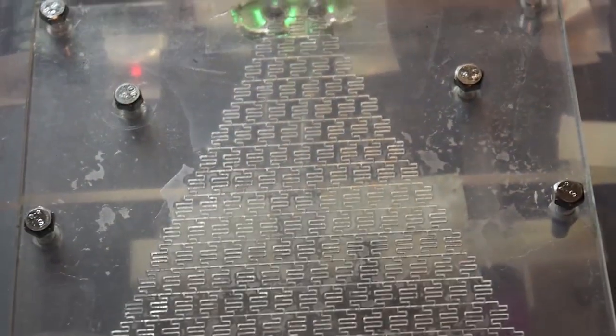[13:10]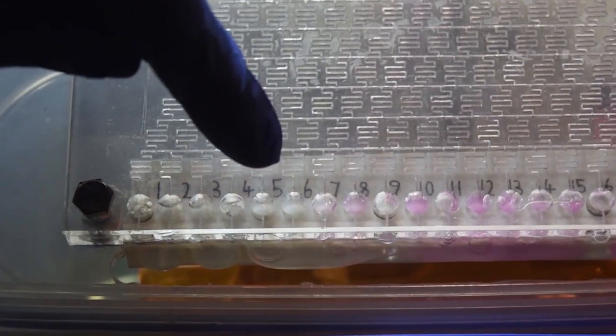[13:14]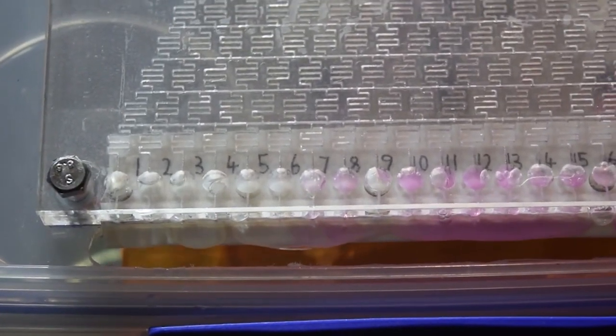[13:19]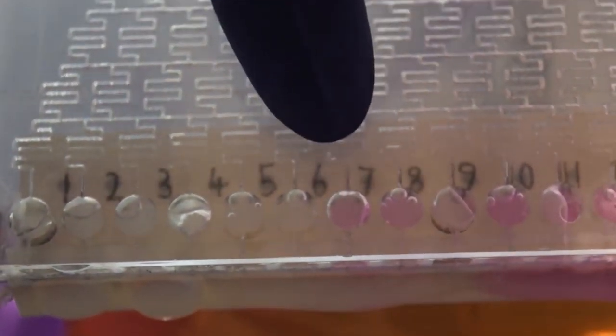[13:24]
What's really good about this design also is the fact that you don't actually need to wash it out with water before you do your next titration. You can actually just run it and it'll flush itself out as you do the next titration. So once again, we've got the app ready and we can run the device again. Already you can see that the pink outputs are coming a lot further across this end. So you can see here that the colour change now occurs on the sixth junction.
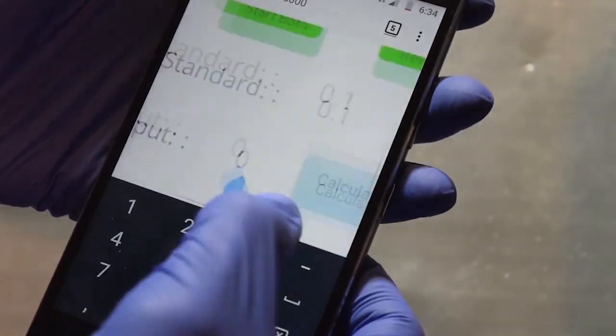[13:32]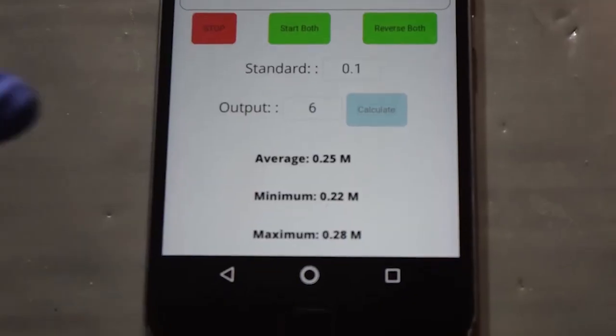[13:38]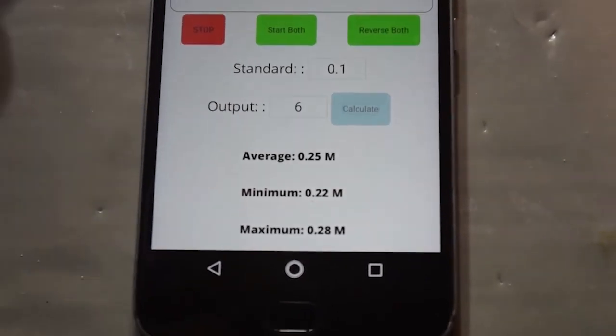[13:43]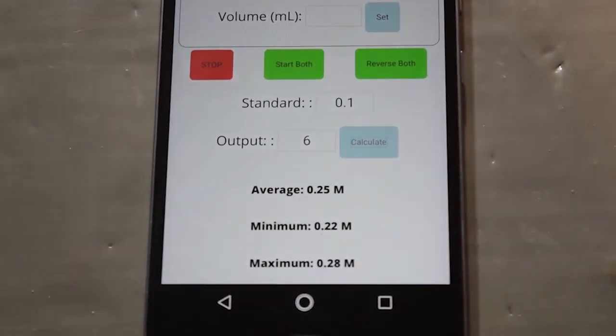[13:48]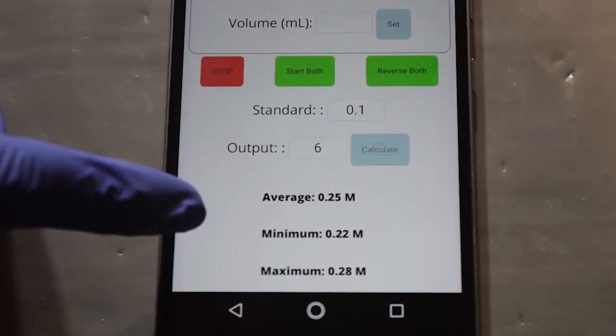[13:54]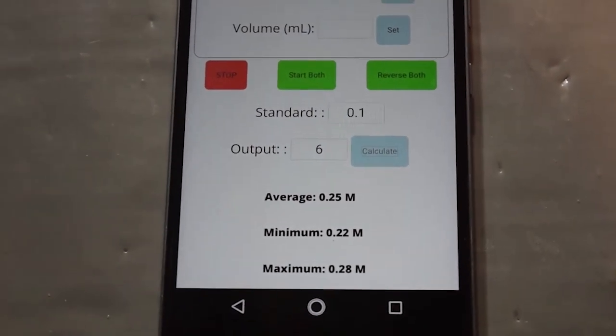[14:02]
So if we come over to the app, we can now type in 6, which we can then calculate. And what we get, as you can see, is an average of a 0.25 molar solution of our sodium hydroxide. The minimum value we've calculated to be 0.22 molar and the maximum being 0.28. This aligns perfectly with what we actually measured the concentration of the sodium hydroxide to be, which is around 0.23 molar. So you can tell that it is quite accurate.
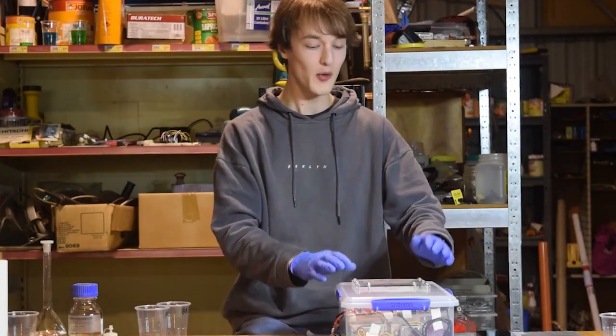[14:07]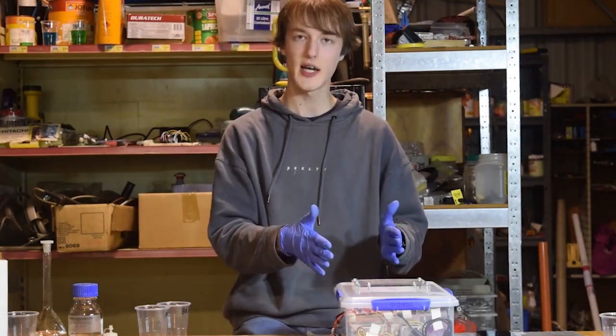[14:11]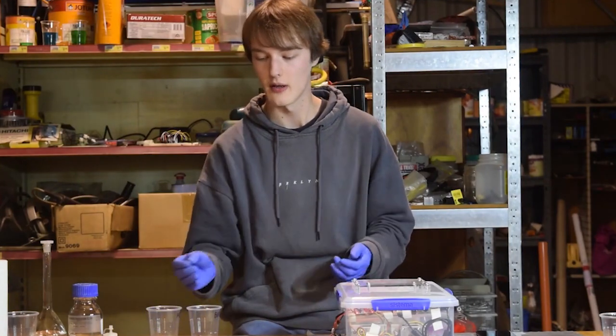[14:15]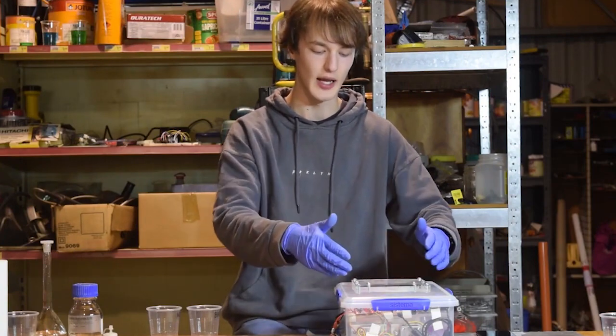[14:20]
So there we go, a quick and easy titration with the portable titration station. It only takes a couple of minutes to fill up syringes with your titrate and your standard solution and then stick them in the syringe pumps and just turn it on through the app. We get a relatively accurate measurement, accurate to around 10%.
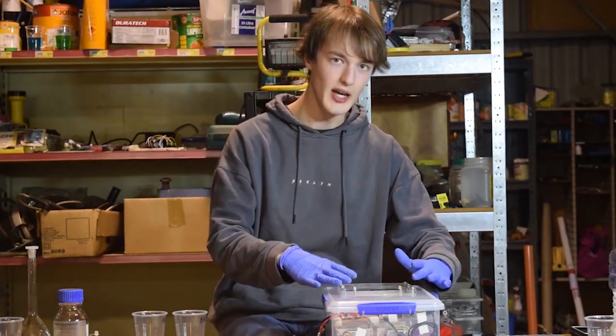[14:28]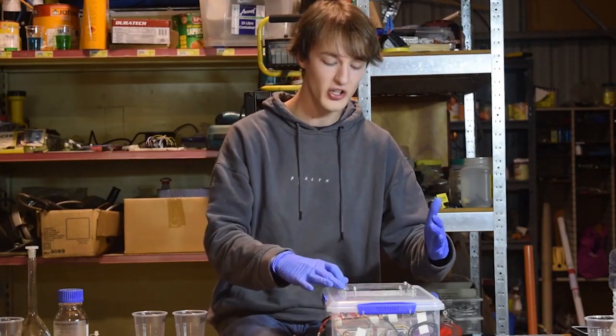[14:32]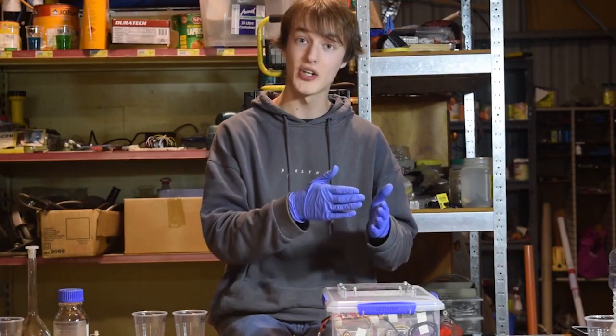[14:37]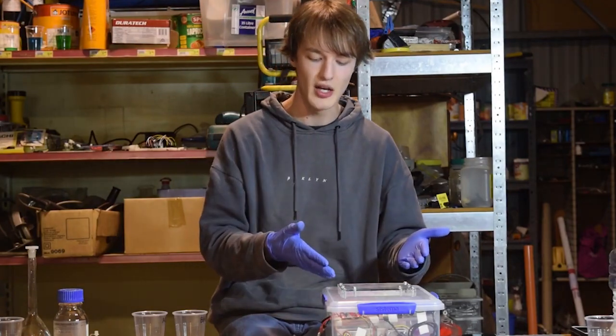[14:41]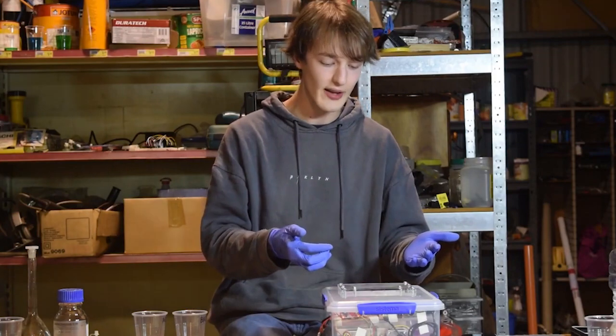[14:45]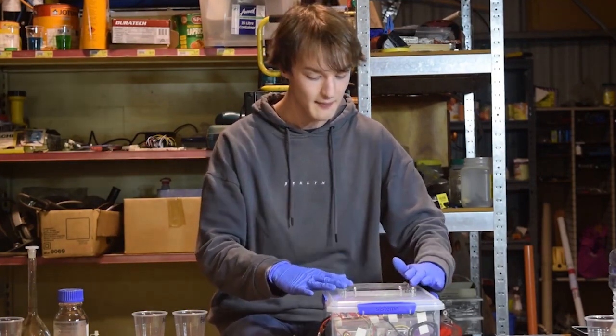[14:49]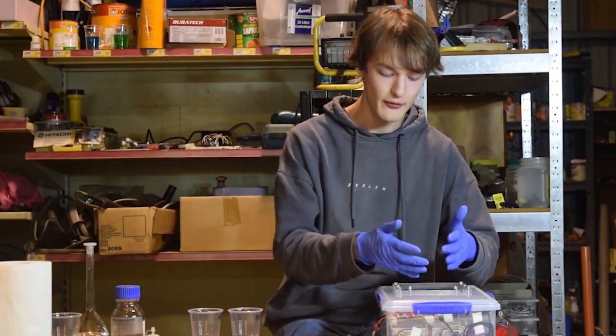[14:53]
Now, a titration design like this can actually be used in many areas, from wastewater treatment to a standard lab titration. We can actually also do redox titrations with this, so that means you'd be able to measure the amount of glucose in someone's blood or someone's iodine levels really easily with not too much modification to the design. So a major part of this project was actually designing the microfluidics for the gradient generator of the titration machine.
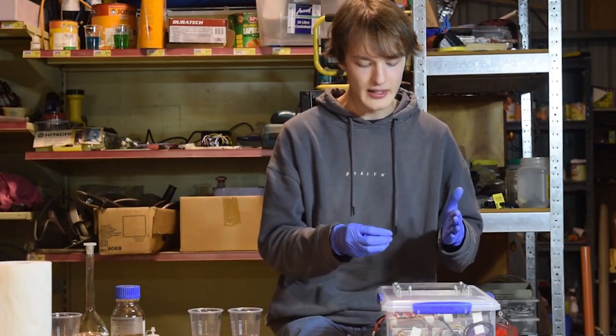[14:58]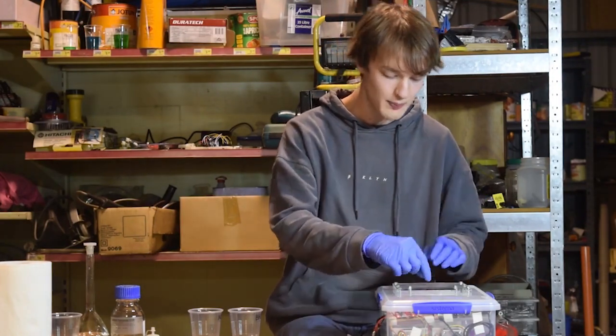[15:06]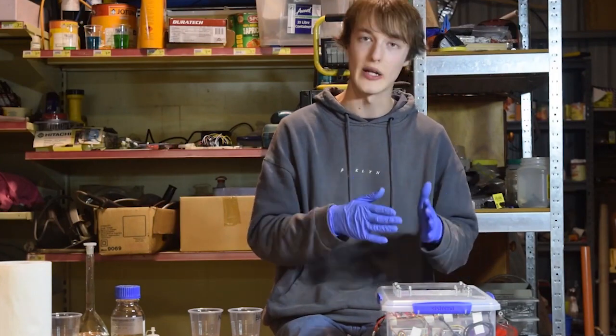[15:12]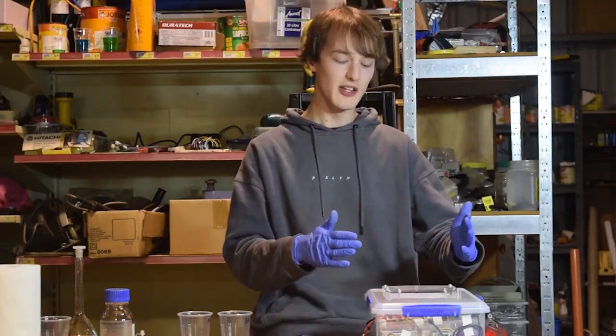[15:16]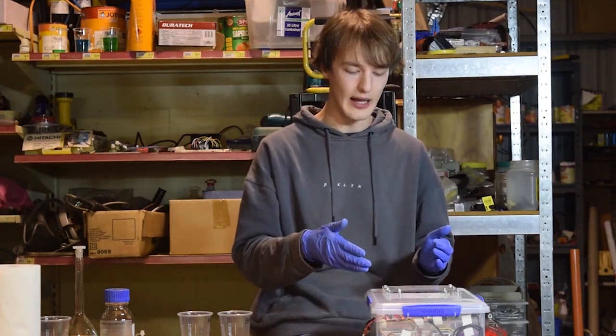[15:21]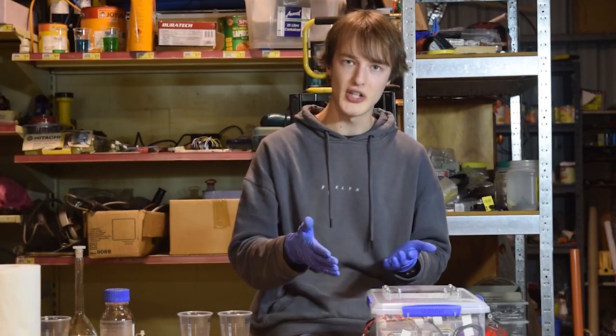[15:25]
Mainly, this involved just coming up with a way to cheaply manufacture really tiny microfluidic channels, which is quite a challenge, but we found that laser cutting them really worked well, was really cheap, and was really quick to create really large patterns. Our new method of fabricating microfluidic circuits really opens up the construction of these things to people with low budgets, limited materials, things like that.
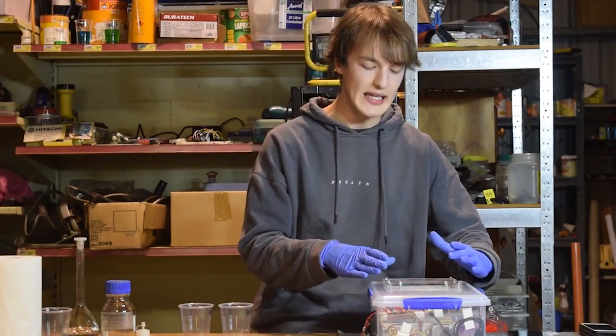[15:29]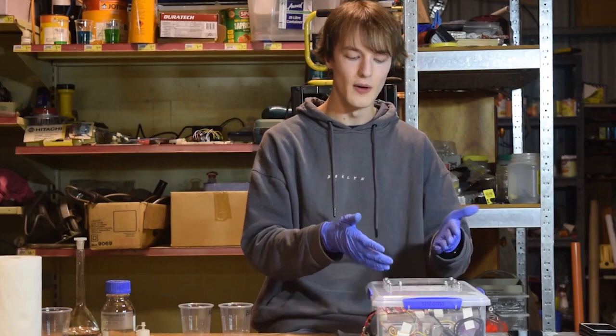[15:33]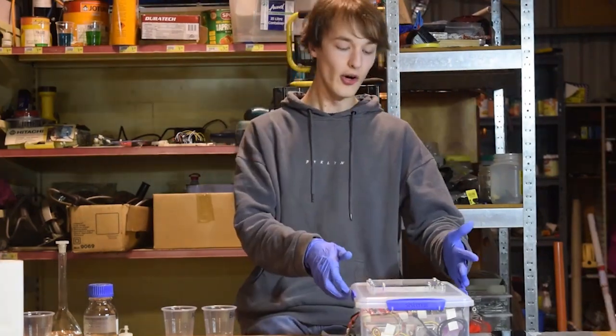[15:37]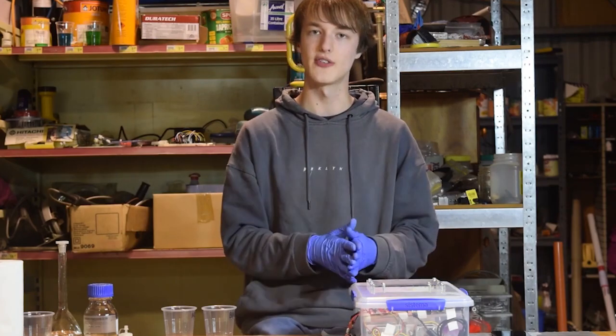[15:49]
What it really does is allow people access to designing their own microfluidic circuits, just like the one we've got here. And all in all, I think it's a pretty successful product. We've overcome all of the design challenges for the microfluidics and the actual titration. We've produced a very usable product, which is hopefully very useful.